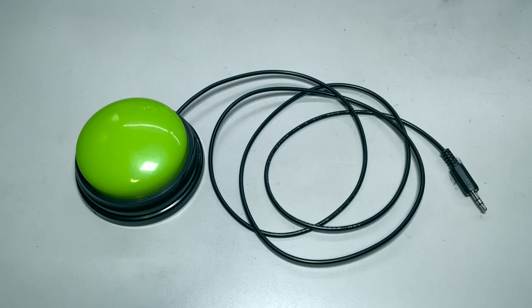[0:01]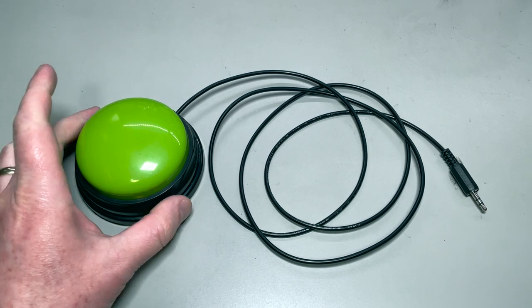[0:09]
Hey folks, today I'm going to show you how you can modify a button to be used as an input for adapted toys. So this one requires a firm press, but gives a nice loud haptic feedback. So if you can apply good force, this will be a good option for you.
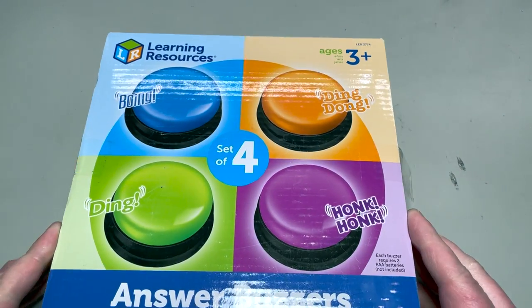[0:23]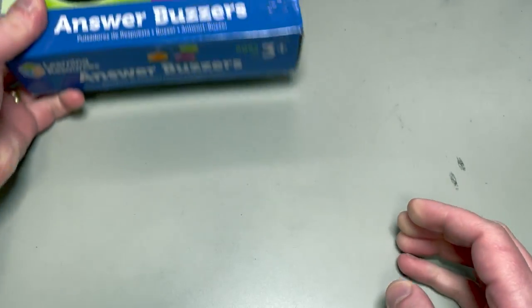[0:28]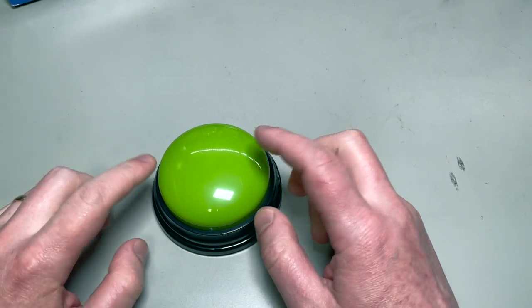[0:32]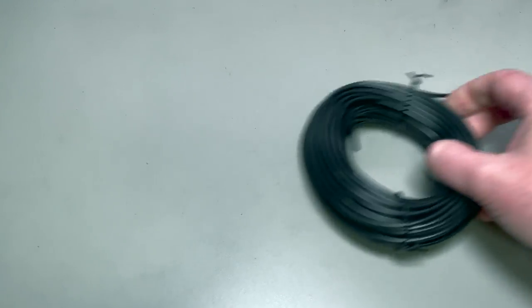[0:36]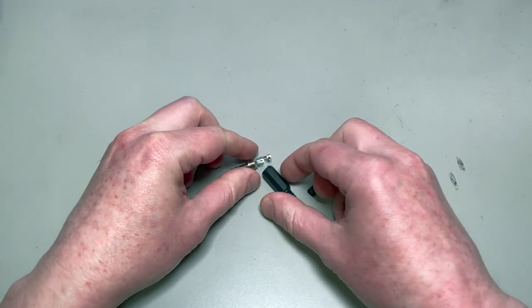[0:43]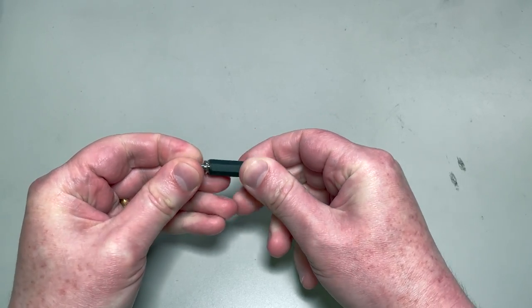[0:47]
So to make this, you're going to need a buzzer. In this case, we're using the Learning Resources Answer Buzzers, but any old button will work. But I'll show you specifically how to use that one. You'll need some wire. This is 24 gauge, two-stranded wire. You'll need the plug that we're going to wire this to, and some heat shrink tubing.
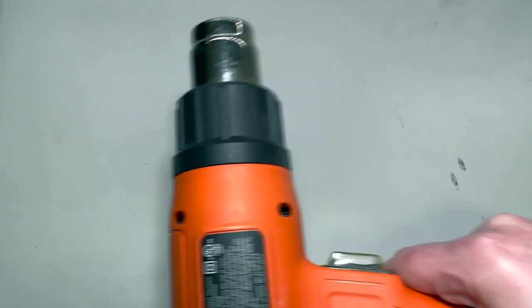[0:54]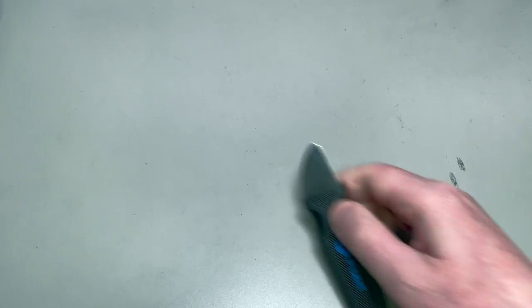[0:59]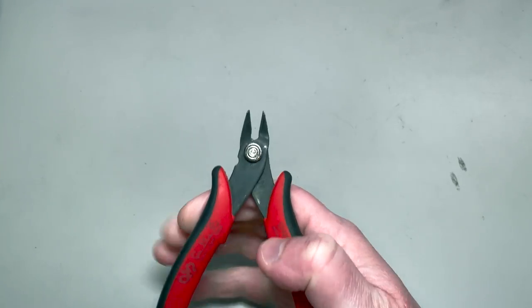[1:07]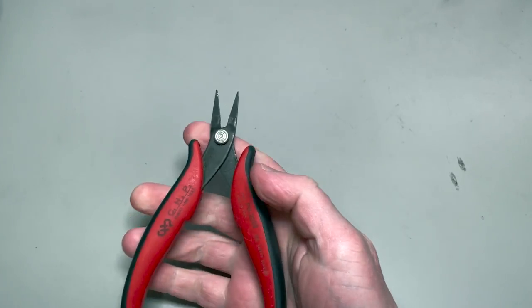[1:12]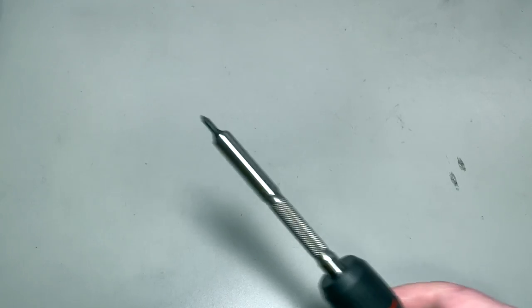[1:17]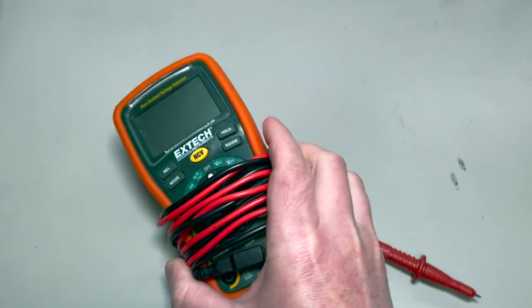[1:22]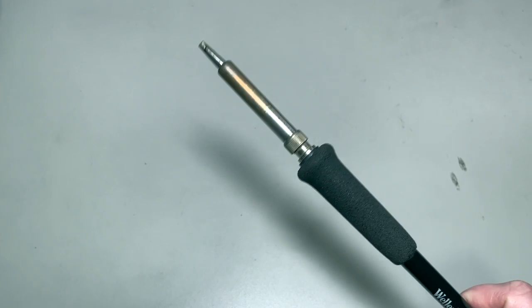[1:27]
You'll probably want a heat gun or a lighter for heat shrink tubing. To get that apart, we're gonna need a spudger or a flathead screwdriver would probably work. Some nippers. I really, really like this pair. I'll give you a link. Some good short needle nose pliers would be great too. A screwdriver to get into this thing. Some wire strippers. A multimeter or continuity tester to make sure that everything is working right, and a soldering iron. All right, here we go.
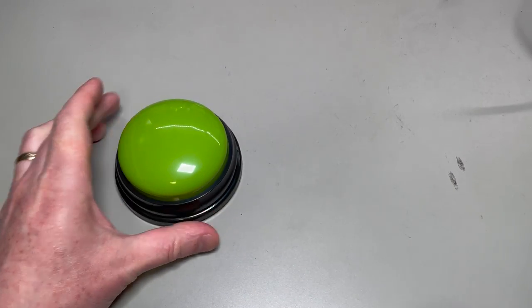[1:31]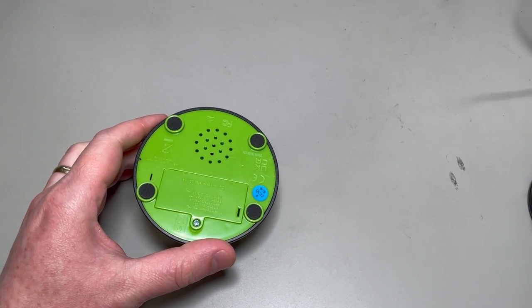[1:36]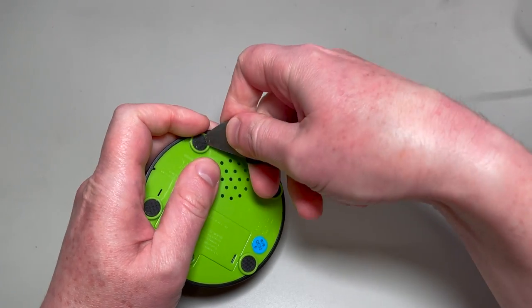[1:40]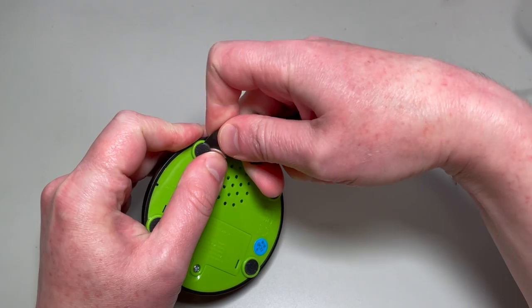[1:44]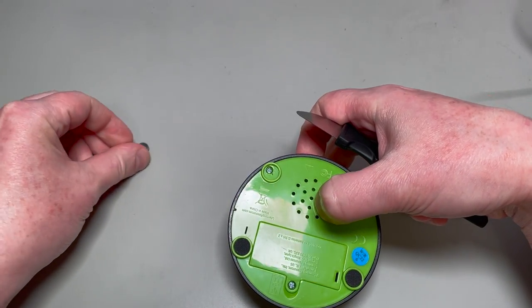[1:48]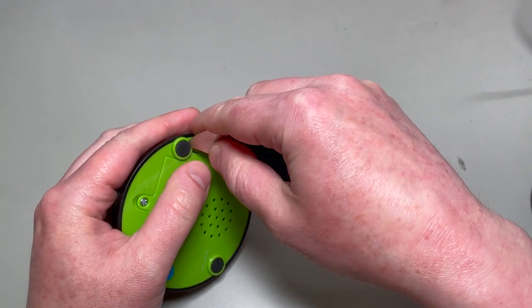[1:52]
First thing we're going to do is take this button apart. So get your spudger or a flathead screwdriver, and we're going to pry out these little rubber feet. They're held in there with an adhesive, and this gives us access to the screws. Set these aside, make sure not to lose them, and I like to set them sticky side up so that it will remain sticky.
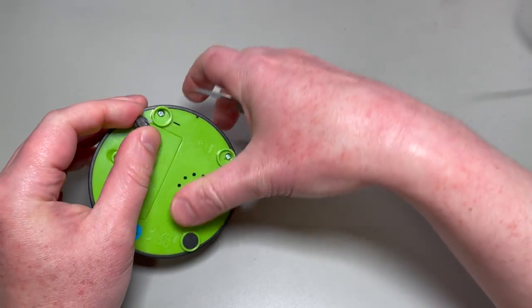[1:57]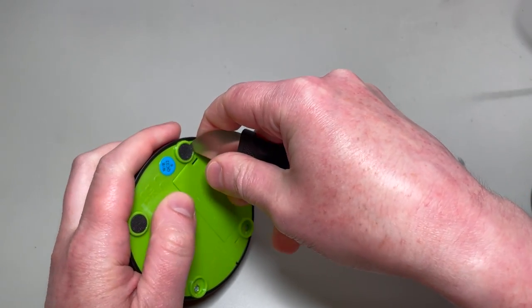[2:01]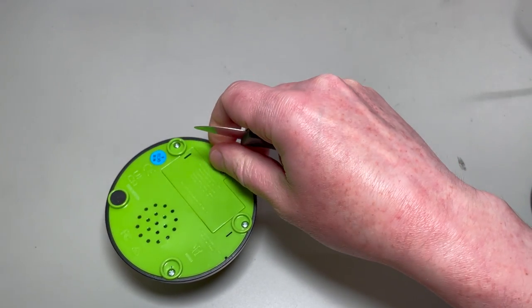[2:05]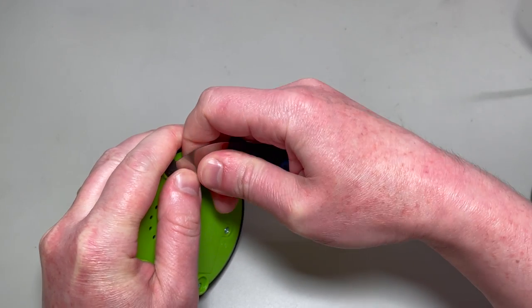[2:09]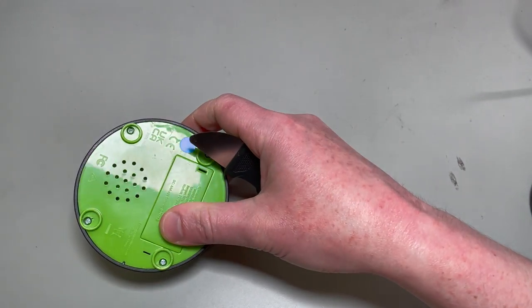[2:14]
I do think there's a chance that these could be considered a choking hazard. If a kid were to chew on this button and pry them out, then that might not be good. So maybe the right choice for you is gonna be to leave them off. I'm gonna put them back in. So I think they're in there pretty safe.
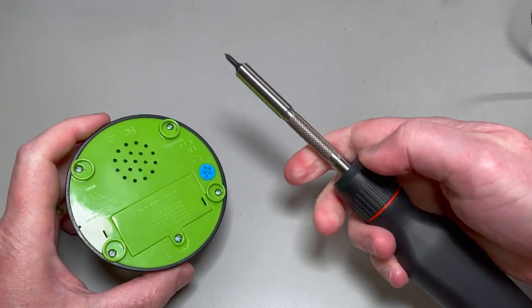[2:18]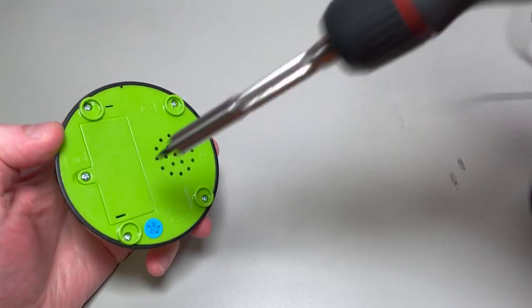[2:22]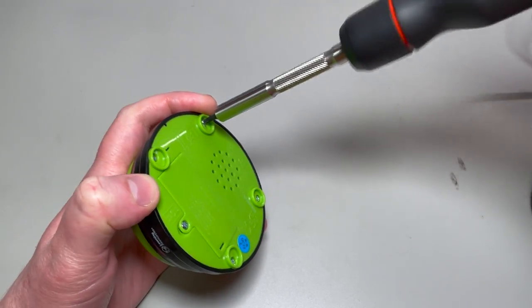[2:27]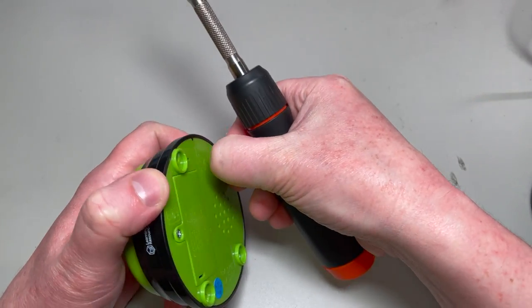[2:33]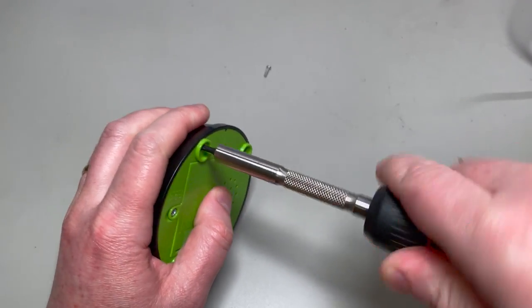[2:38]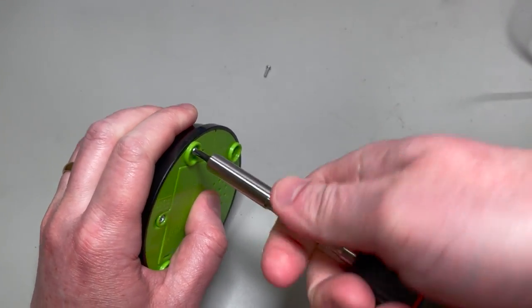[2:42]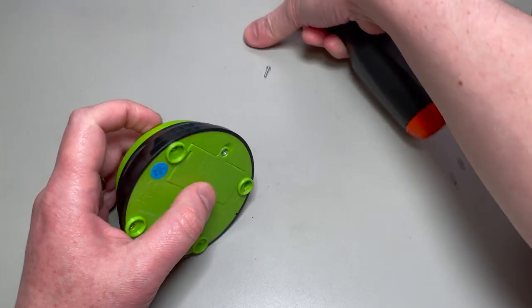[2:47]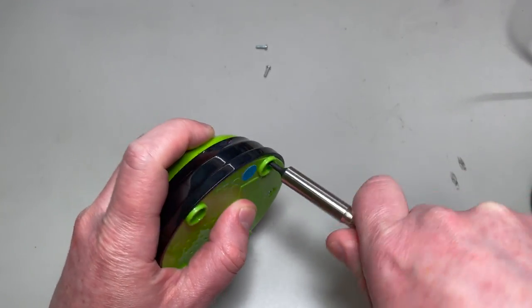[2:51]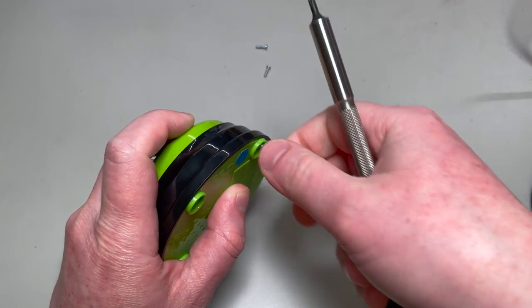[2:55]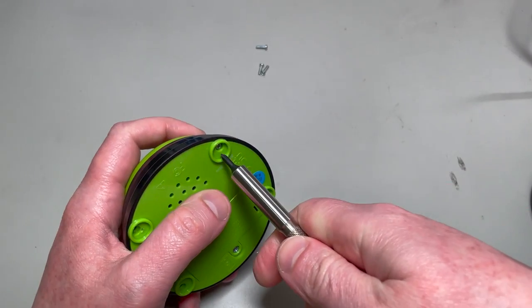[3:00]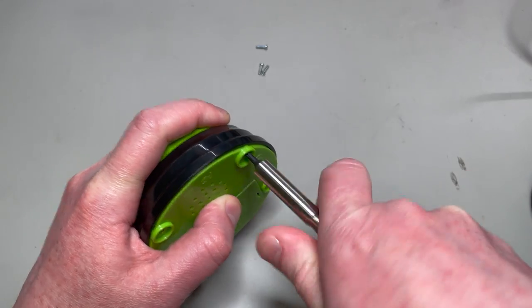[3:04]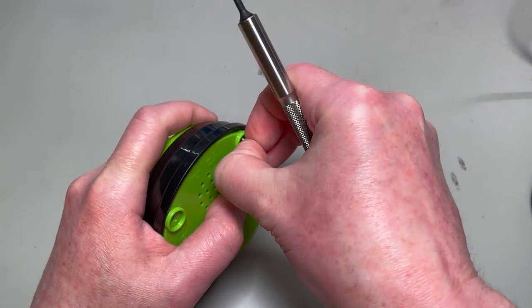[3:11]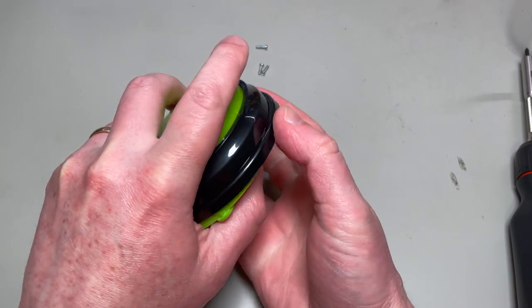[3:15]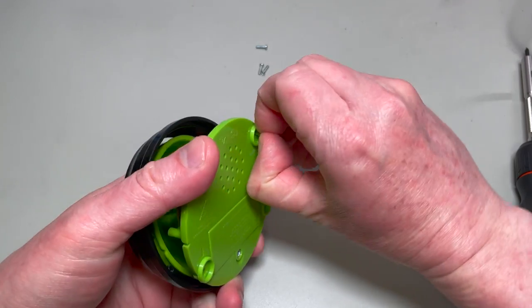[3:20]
Okay, and then let's take out these four screws. In here, in this one is the battery compartment. We're actually just gonna leave that alone because when we're done, this thing won't need any batteries. Set these screws aside. Again, make sure you don't lose them.
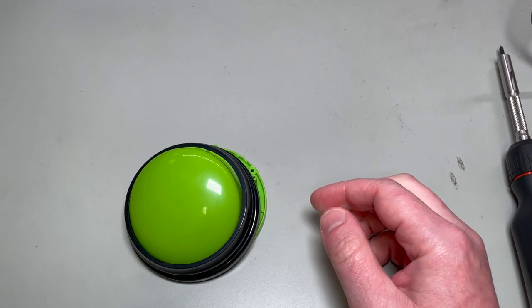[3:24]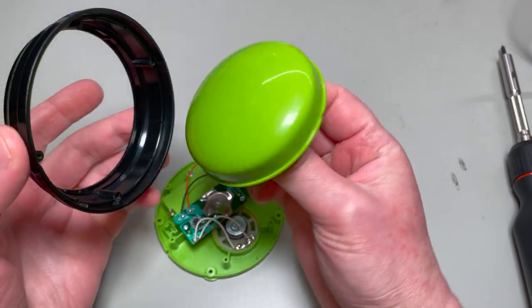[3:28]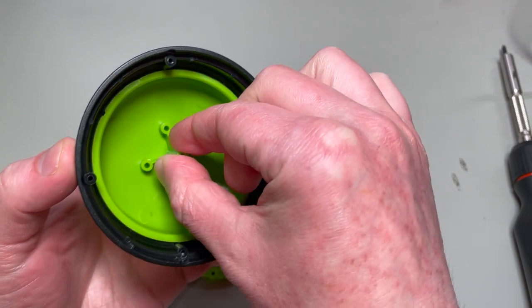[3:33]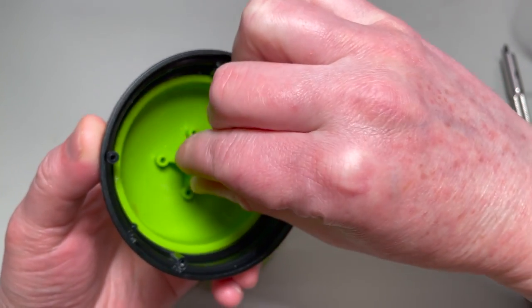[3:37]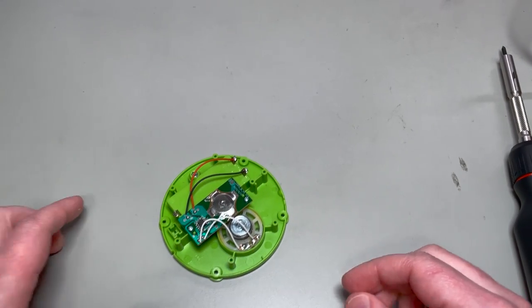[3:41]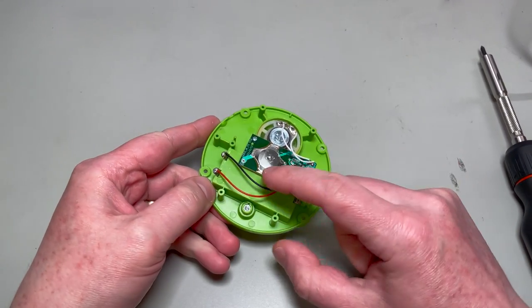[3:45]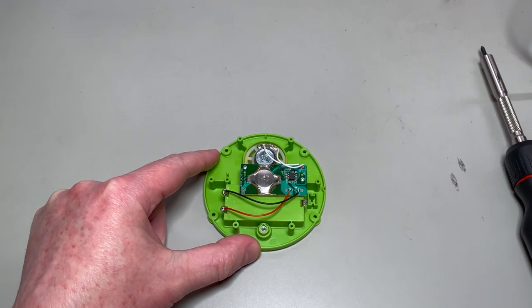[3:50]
Okay, and now we can look on the inside. So the button and its housing come apart. You'll notice there's a little groove that this button will slot into so that it can't rotate. You'll want to pay attention to that when we're putting it back together. Here's the inside. So the switch just comes down, makes contact with this big pad right here.
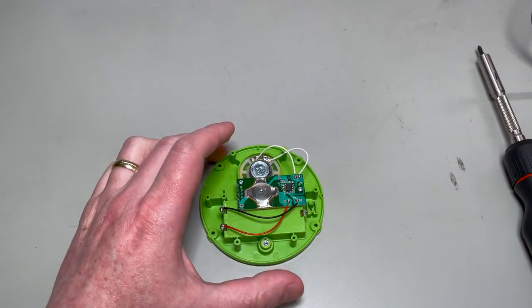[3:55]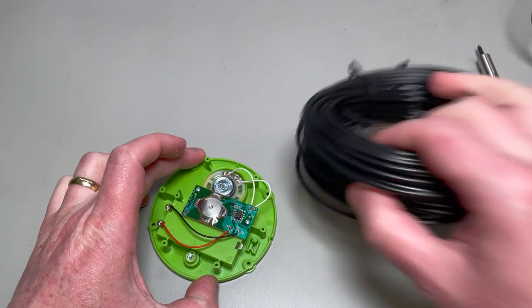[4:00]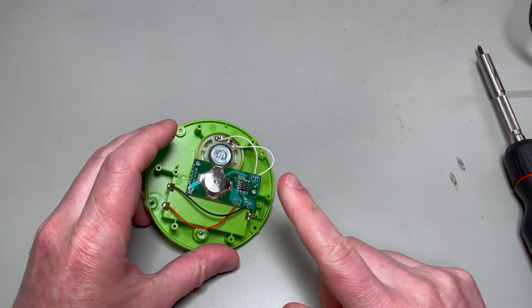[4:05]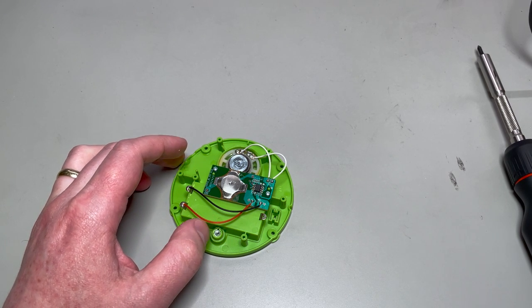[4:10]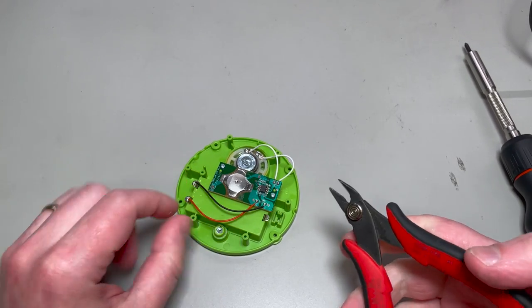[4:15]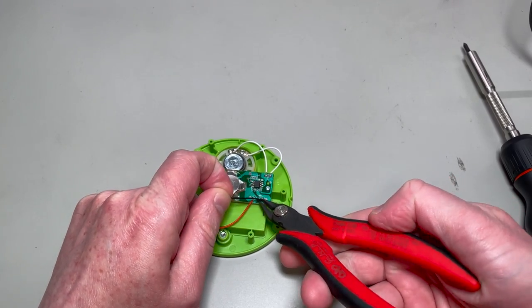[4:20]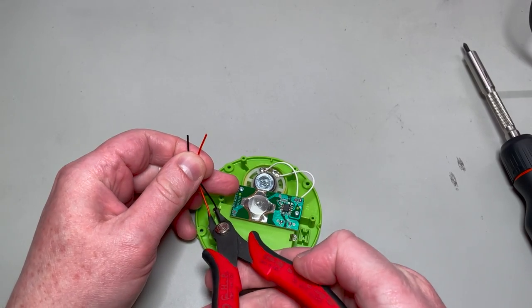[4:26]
And so what we're going to do is solder a wire in so that it bridges where this switch would close the circuit when it's pressed. Now, because we'll be plugging this into another toy that could have its own power supply, we want to make sure that nothing ever sends power from here to that toy. So the first thing we're going to do is cut the power lines. So let's just snip off these black and red wires and get rid of them. That way this thing can never do any harm.
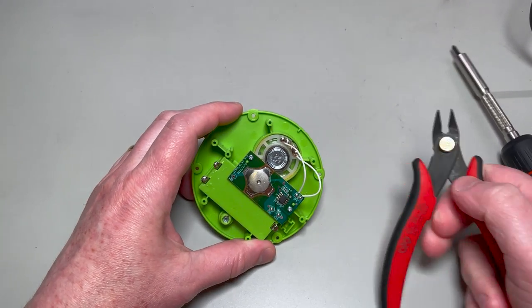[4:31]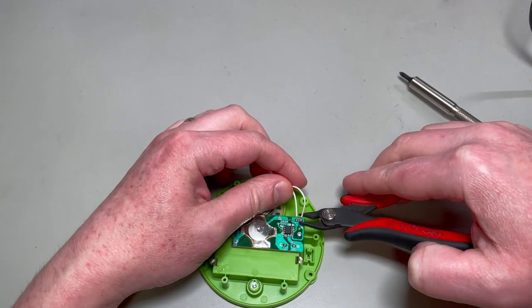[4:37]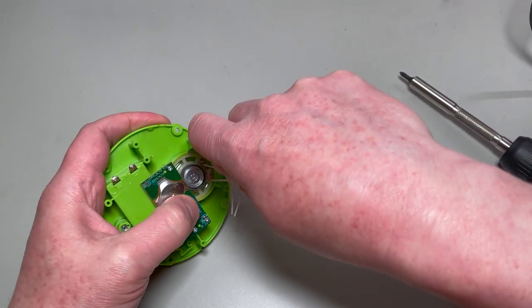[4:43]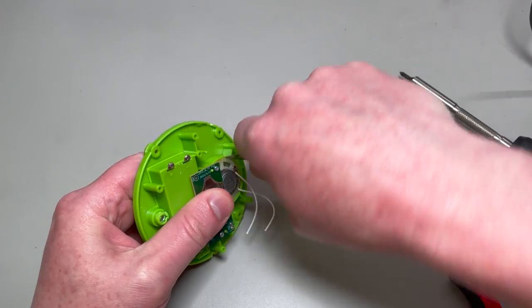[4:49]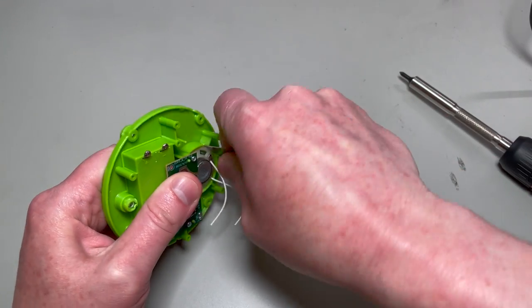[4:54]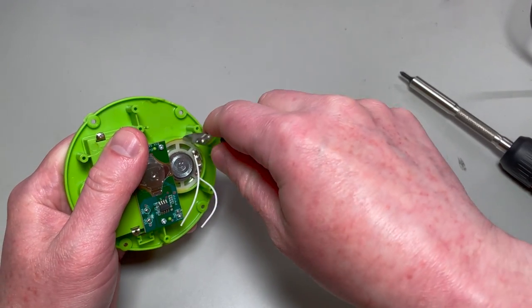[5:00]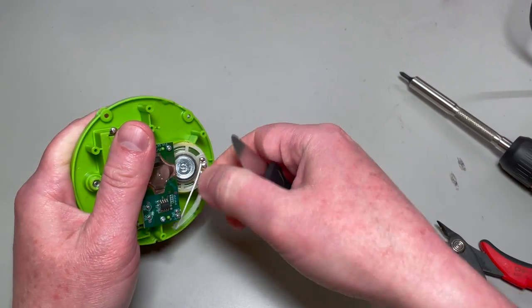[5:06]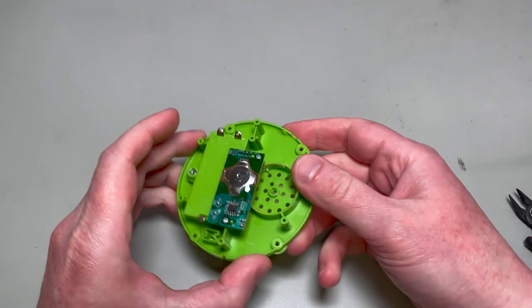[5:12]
There's also a speaker in here that this toy uses that we won't need. And you could leave that, but I'm going to cut it, and I'm actually going to pry out this speaker and harvest it for future fun times. Who knows, maybe there'll be a different project that needs a speaker. So you're coming with me. Okay. Goodbye, speaker. All right, now we have just our board.
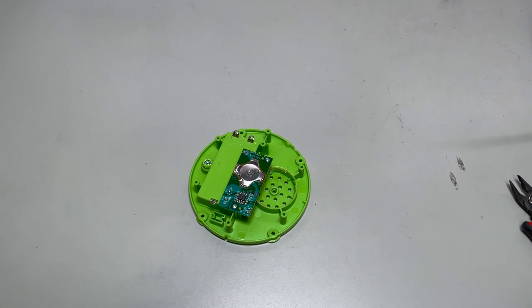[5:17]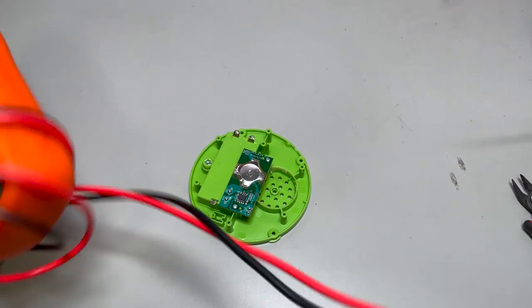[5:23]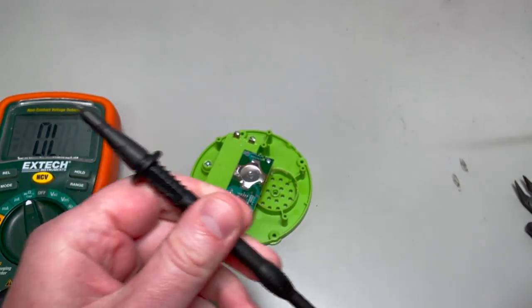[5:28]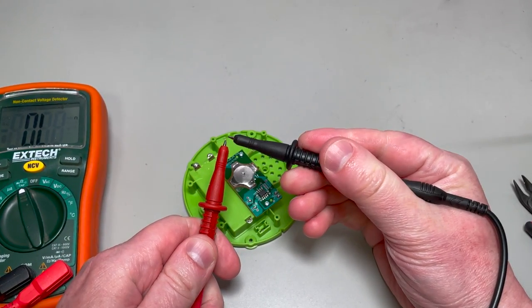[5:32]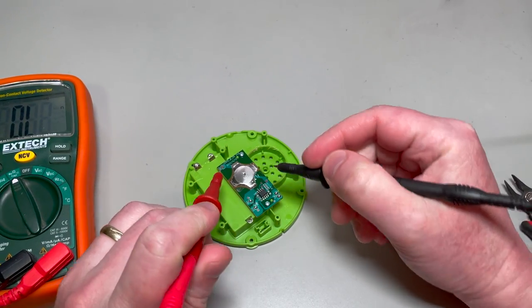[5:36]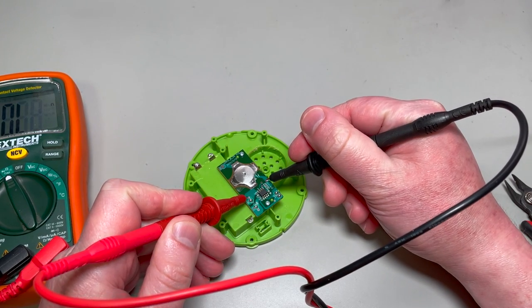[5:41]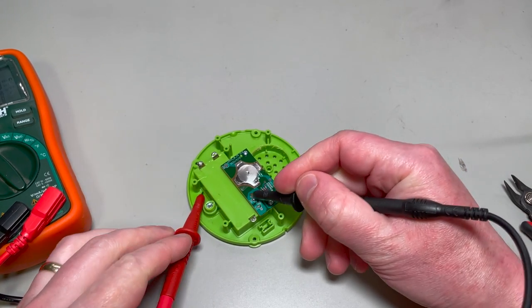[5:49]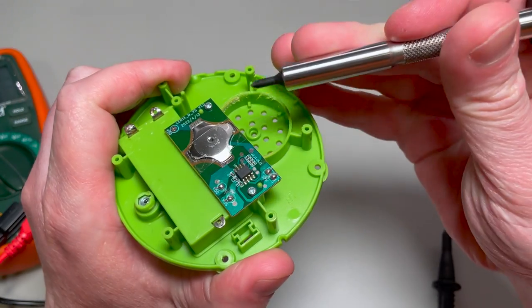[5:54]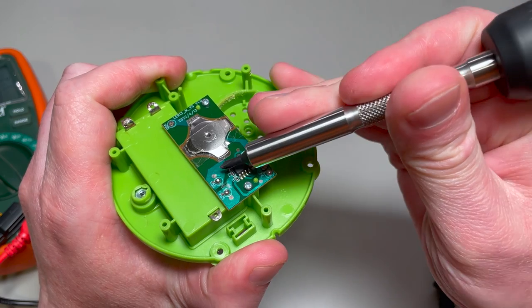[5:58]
So this is where you would want to use a continuity tester to determine what wires we're going to be connecting. You don't need to here because I'll show you. So we confirm that when these two touch, we get a beep. Great. So I know that the switch connects from this pad right here to this pad up here. So if I touch them, nothing, but then if I depress the switch, great. So we'll be soldering to this point and this point. Let's see if I can make that really easy for you to see. It's going to be this pad right here and this pad right here. Okay.
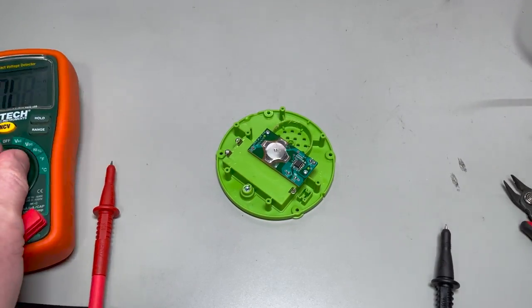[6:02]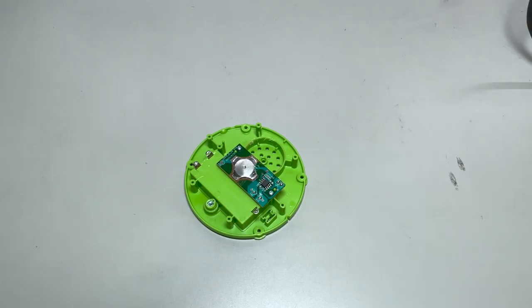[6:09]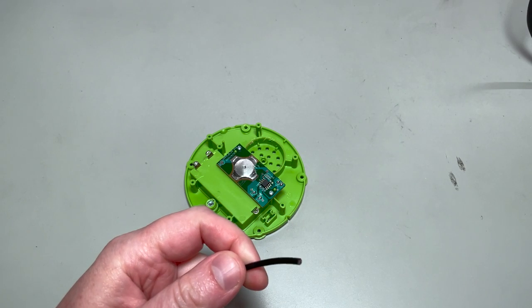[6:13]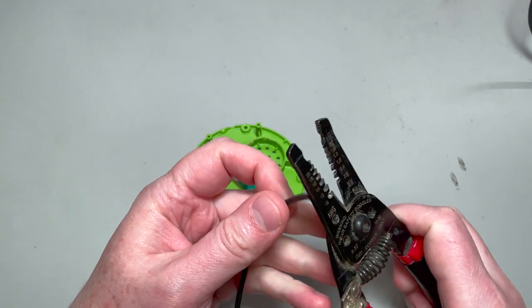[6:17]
Next step, you'll want to measure out and cut off 5 feet of your wire. So here I've got a good long length, and then we're going to strip some of the exterior of the wire off.
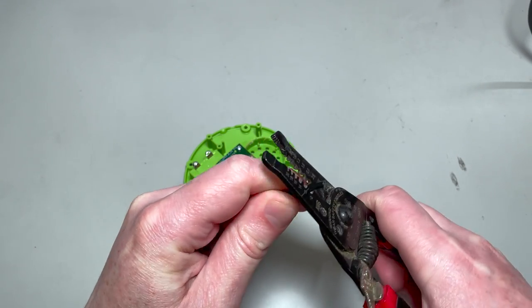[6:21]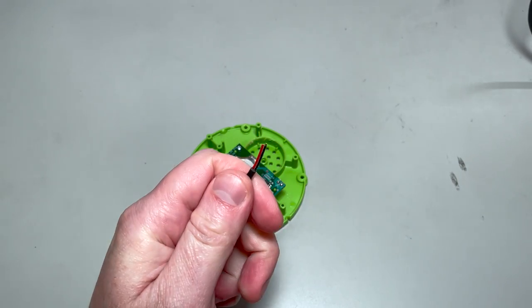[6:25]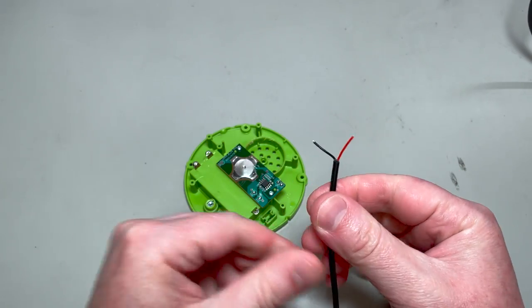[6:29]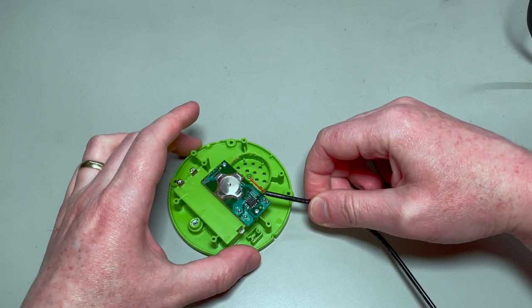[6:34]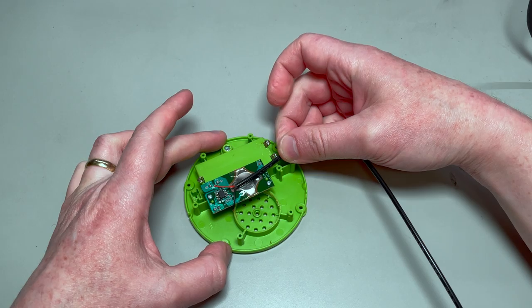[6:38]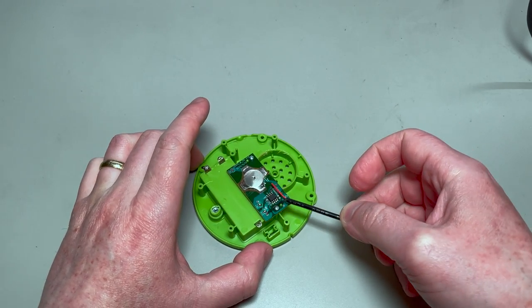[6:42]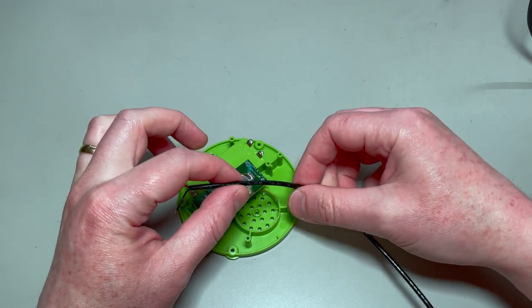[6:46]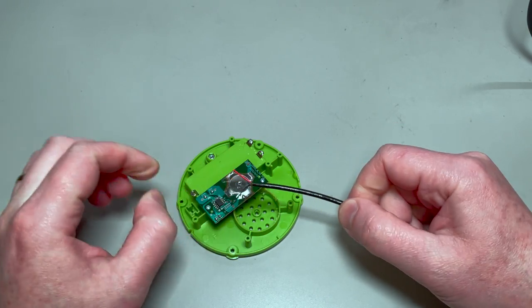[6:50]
Revealing the two leads inside. When the wire escapes the housing, you just want to make sure that it's not going to cross the switch area. So I like to orient it maybe this way, maybe this way. The other thing is we're going to want to put some strain relief on it so that if someone were to pull the wire from the outside, it wouldn't try and just rip off the solder joints.
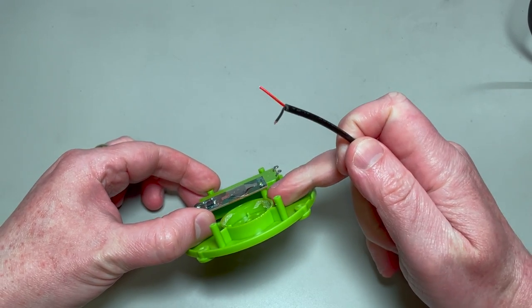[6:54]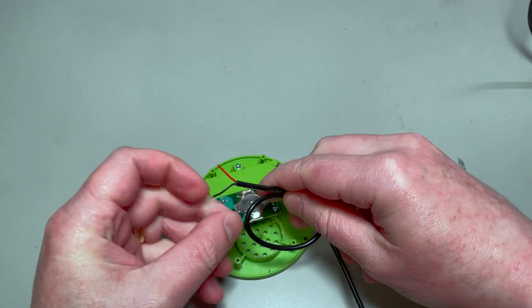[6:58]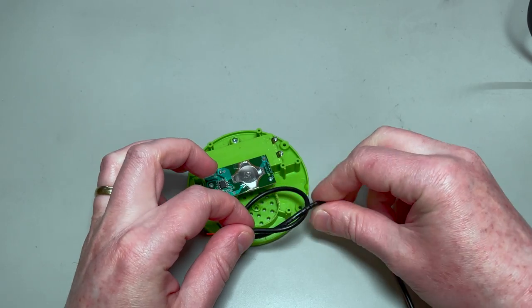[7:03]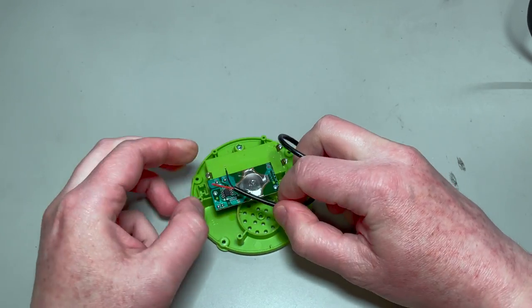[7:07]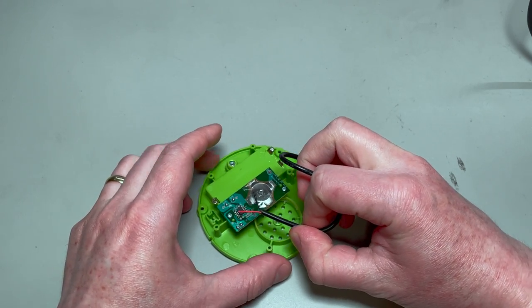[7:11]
So there's actually a post in here that I'm going to loop the wire through, tie it into a knot, and then that will provide the strain relief. So take that into account when you are situating your wire. Because of how the knot's going to get tied, I'm actually going to put it kind of like this.
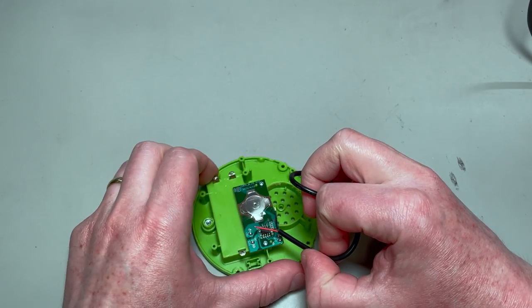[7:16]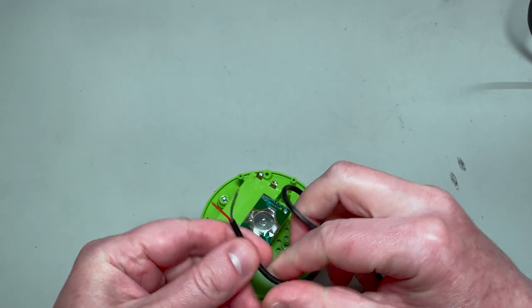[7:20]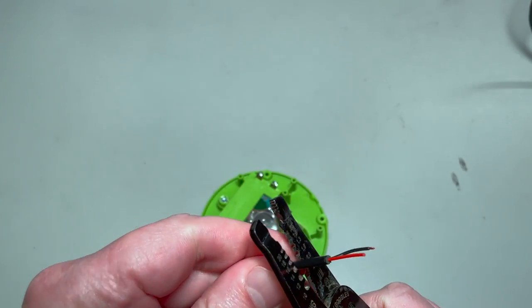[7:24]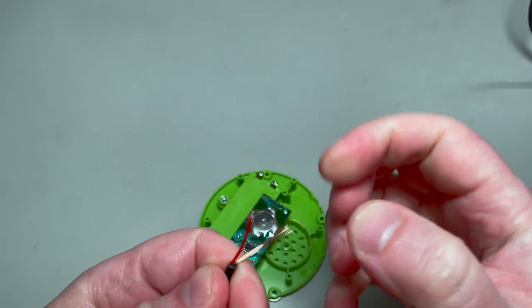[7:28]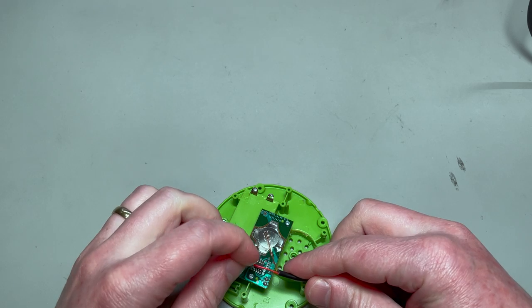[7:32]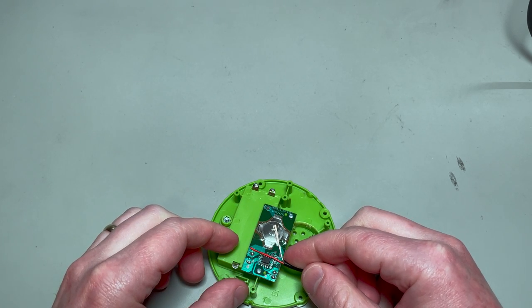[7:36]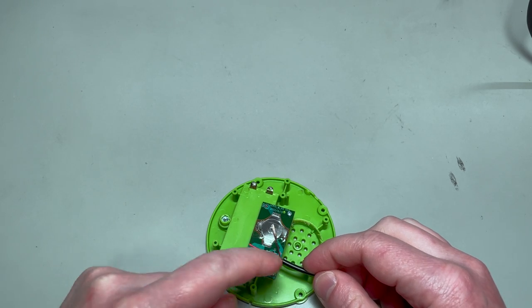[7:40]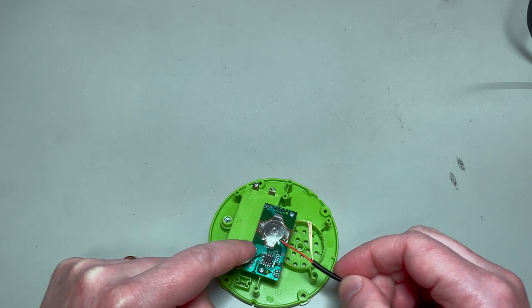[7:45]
Okay. So I'm going to strip off just a little bit more. Oh, and the whole black wire came with me. Well, that answers my next question, which lead is getting soldered where. Because the black has been stripped all the way back, I'll go ahead and solder it to this pad, and then I'll solder the red to this one over here.
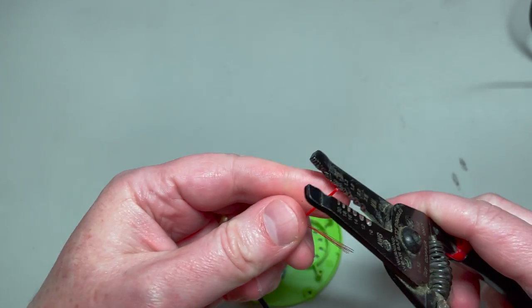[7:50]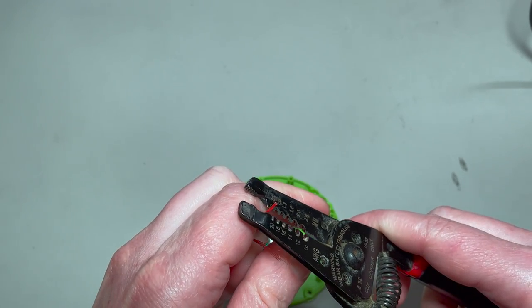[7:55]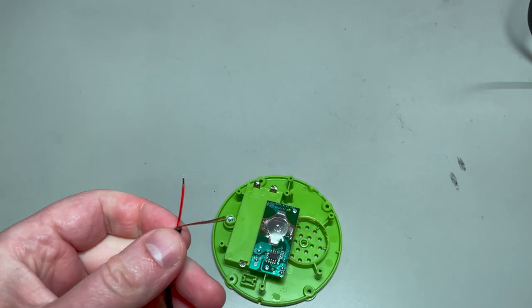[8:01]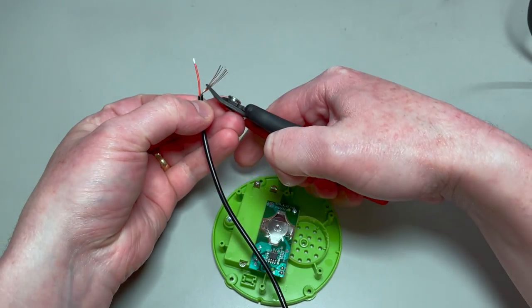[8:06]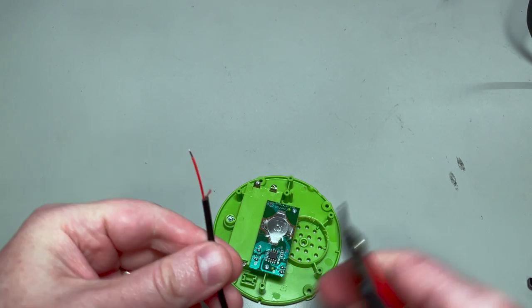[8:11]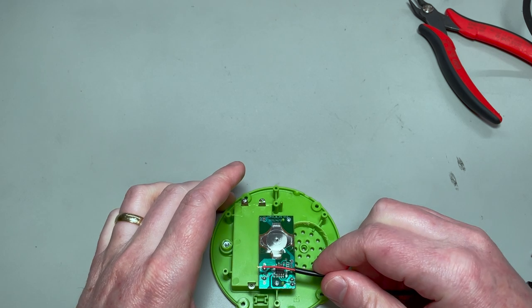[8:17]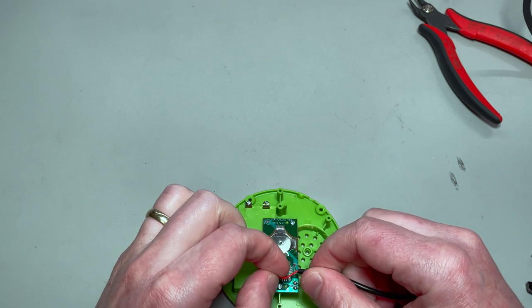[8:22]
So I just want to strip off just a little bit of the end of that red. There we go. And we'll use our cutters to go ahead and cut down all the excess from that black lead that we don't need. Okay. Twist these up just a little bit. Okay, and so we'll be soldering black there, the red there. Great, let's go ahead and get the iron hot and we'll get that soldered.
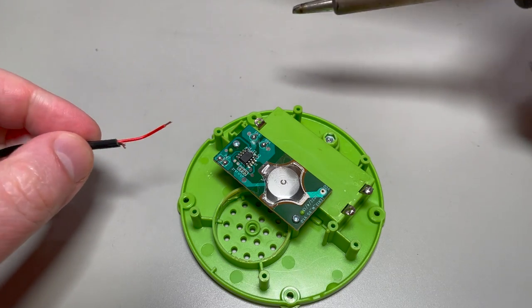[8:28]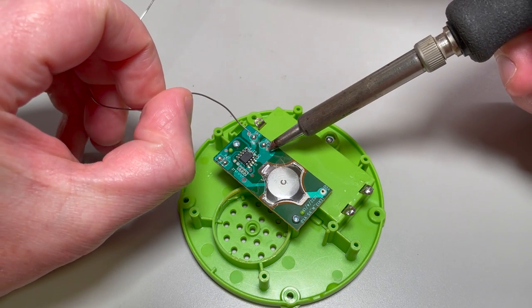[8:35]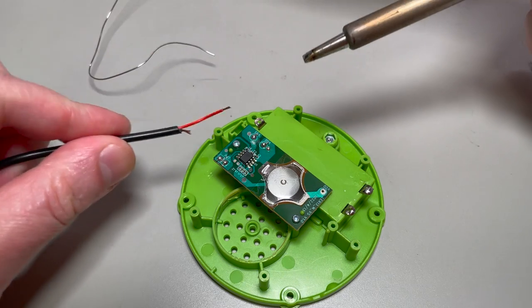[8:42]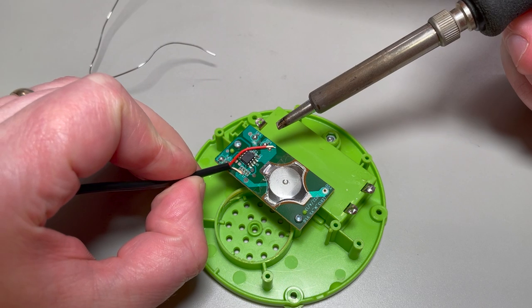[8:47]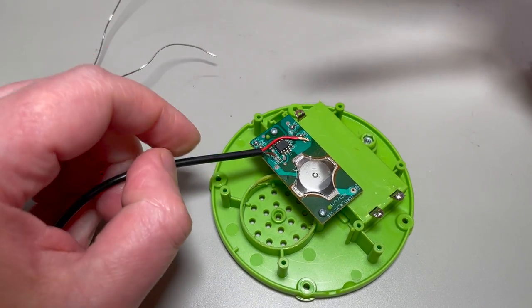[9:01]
I've turned this so the angle's a little easier for me to work with. The iron's hot and the end has been tinned. So I'm gonna go ahead and first try and apply a little dab of solder to this pad. Great. And now I'll set the red wire on the end there where it's going to go. Press down, heat the wire, heat the pad until the solder begins to stick. There we go. Let it harden up a little bit.
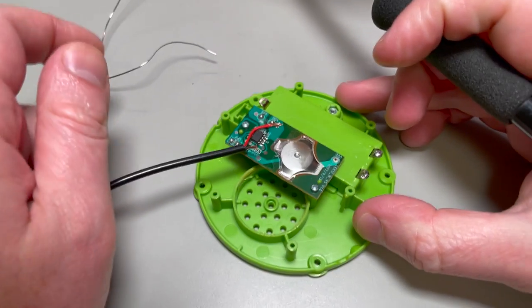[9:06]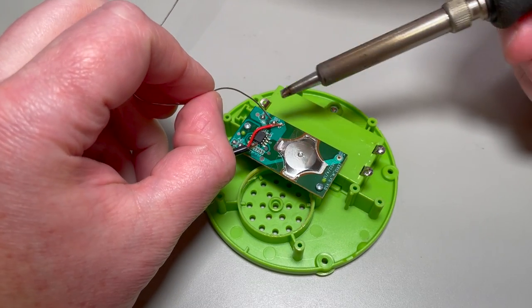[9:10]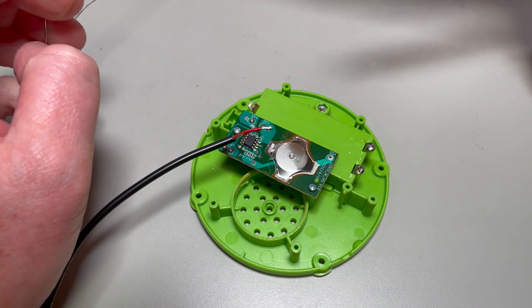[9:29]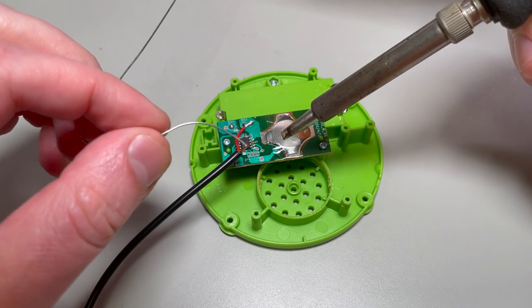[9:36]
That's a decent start to this connection. Sorry for jostling you there. Put some extra solder on this, make sure it's feeling secure. There we go. Oop, came off. Try again, heat it up, press it down. You can actually go ahead and use the pad that the original positive line was coming in. It's much more convenient. Okay, do the same thing for this other pad.
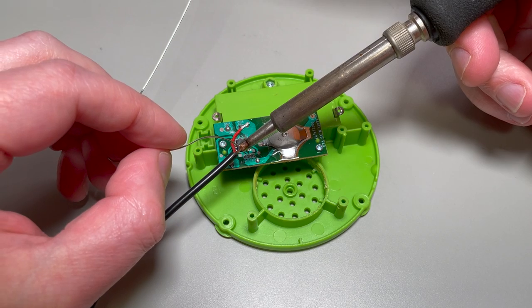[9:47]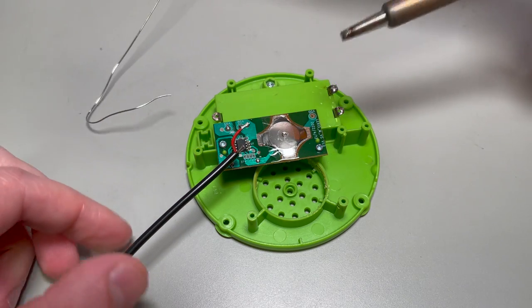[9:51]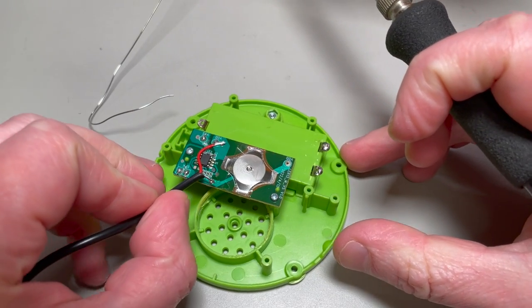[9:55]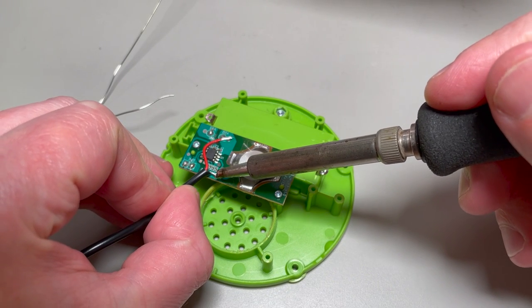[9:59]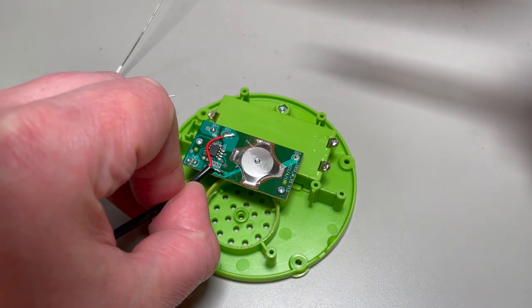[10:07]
And this time, I'm actually going to tin this wire first. There we go, get some solder on the end there. And now, because there's solder on the pad and solder on the wire, I can just heat them both up together, let go, and that connection should be secure. Excellent.
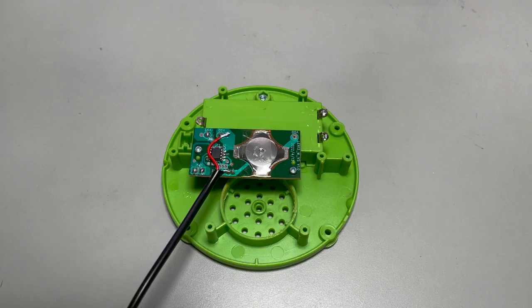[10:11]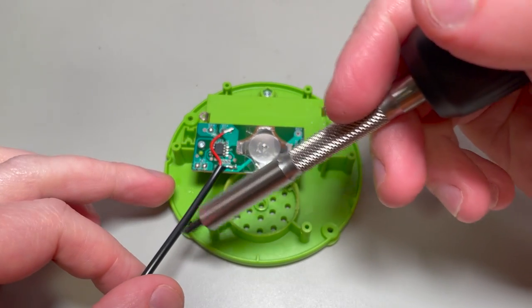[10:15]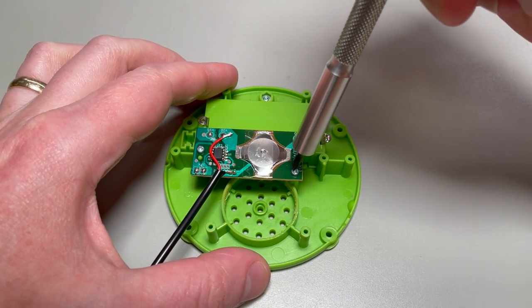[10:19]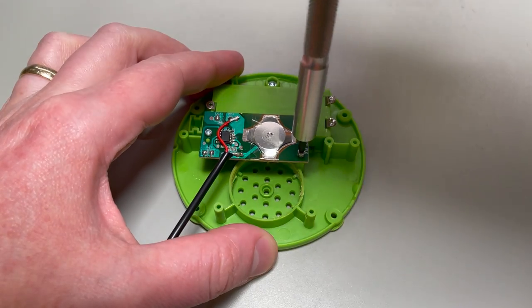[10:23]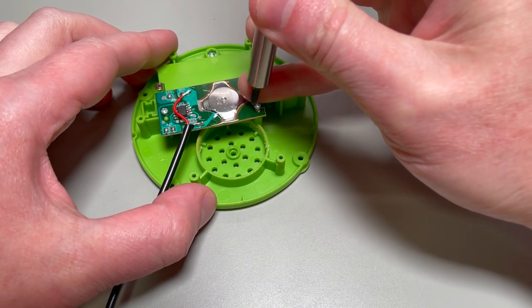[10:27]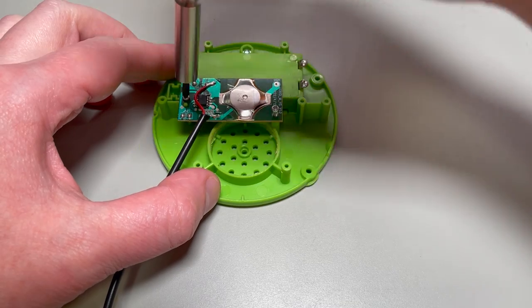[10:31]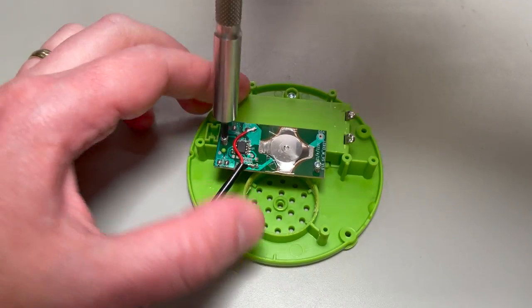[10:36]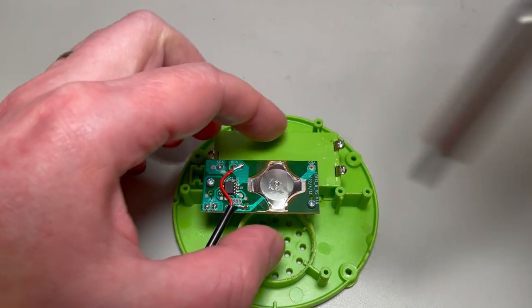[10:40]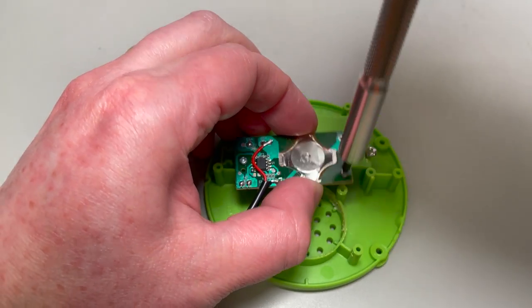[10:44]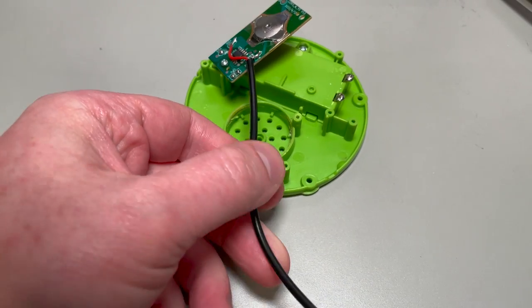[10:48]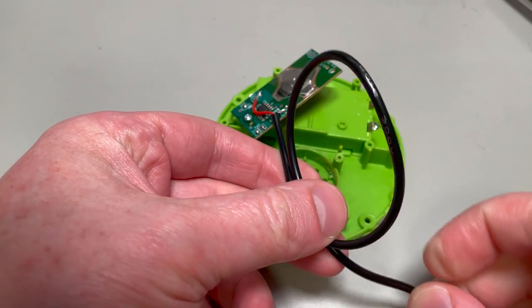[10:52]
Now that the solder joint has been made, it's time to tie the wire onto this post, but I find it a little difficult to get to, so I'm actually going to take out the two screws holding this board in. So one there, one here. Tie ourselves a knot. Okay, how do you tie a knot? There we go.
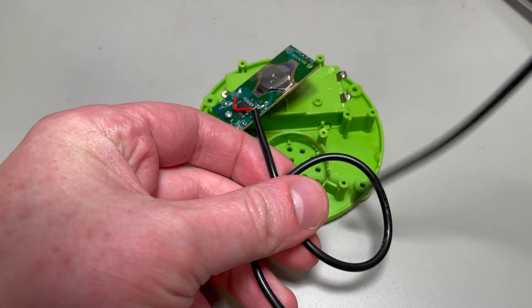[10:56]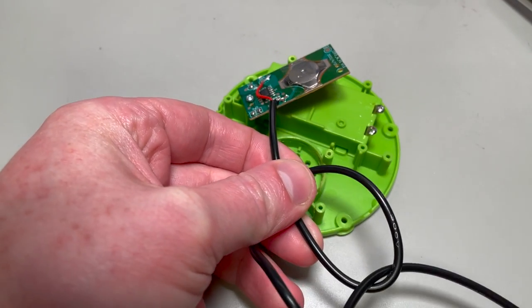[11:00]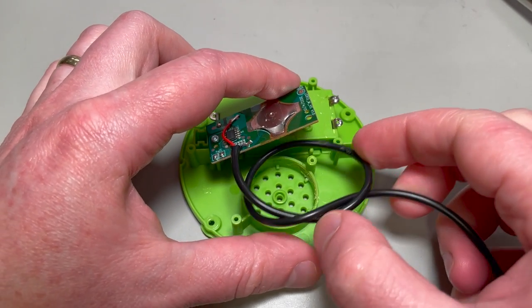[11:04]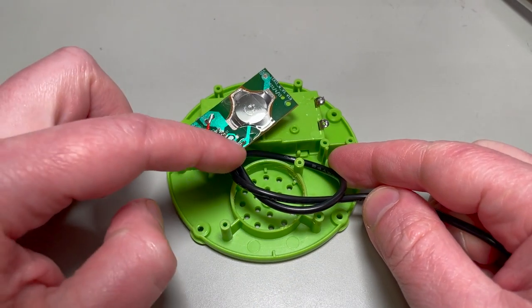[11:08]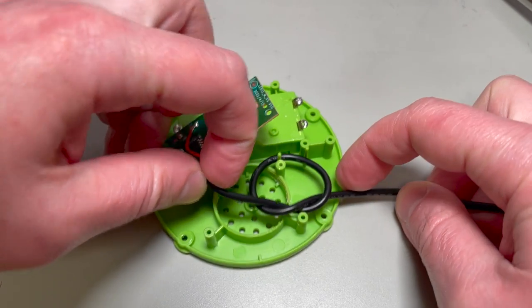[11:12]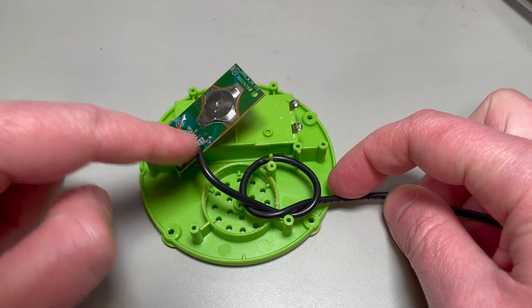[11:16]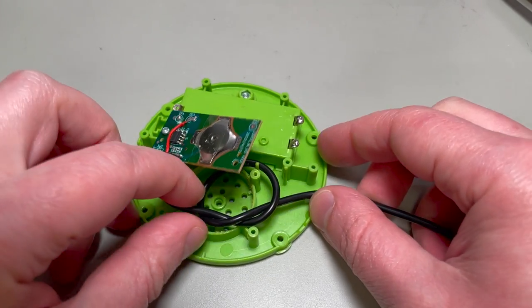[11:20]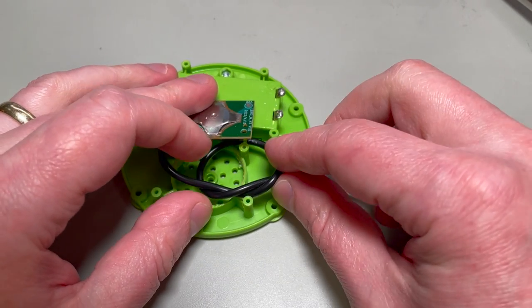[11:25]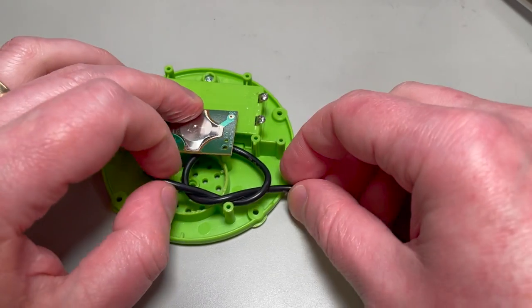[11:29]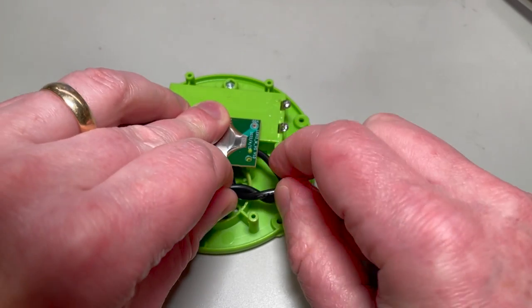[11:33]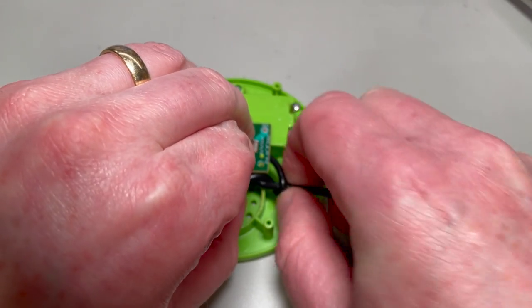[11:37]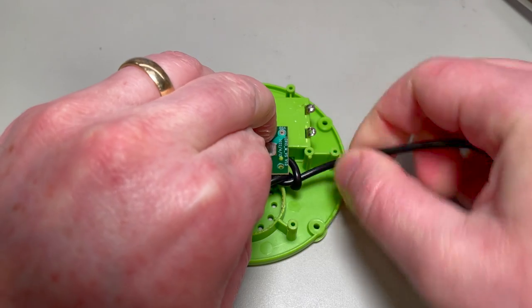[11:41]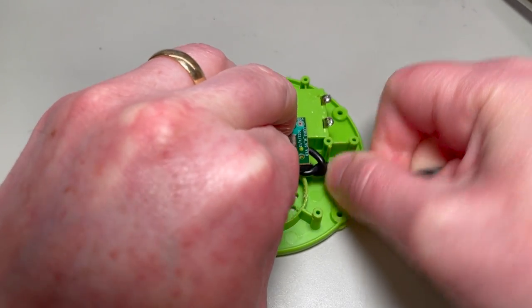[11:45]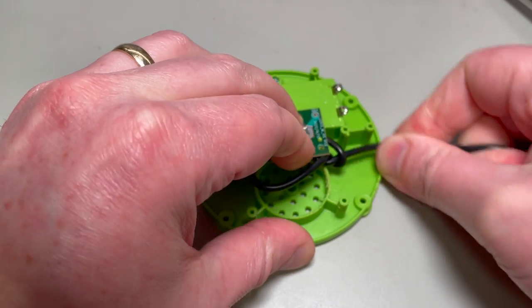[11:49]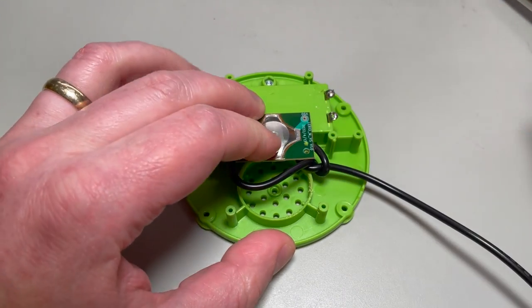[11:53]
Now be careful when you're cinching this up that you both leave enough slack on this part of the wire that you're not going to pull these solder joints off, but also don't leave so much slack that this wire is gonna hang out and hit the button housing. So we've got it in place. Now I'll cinch it down, keeping the tension that I want. Okay. That's pretty good. Yeah, that's not going anywhere. Okay, time to tighten these screws back on.
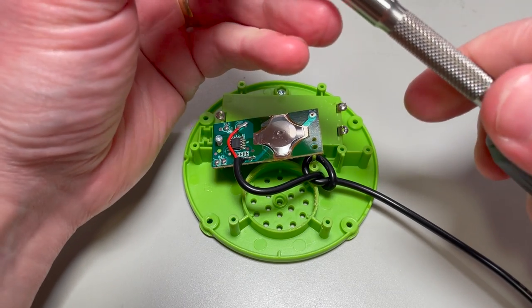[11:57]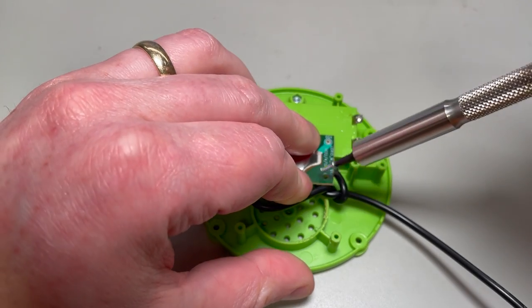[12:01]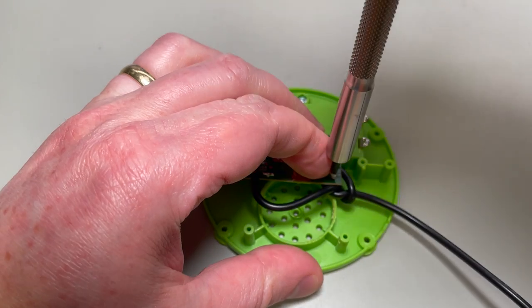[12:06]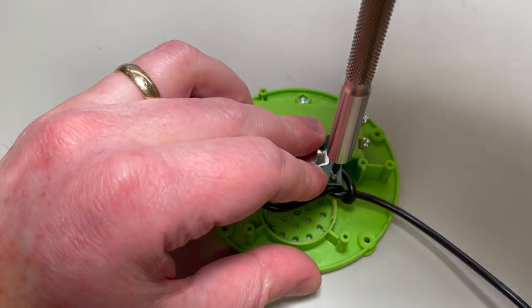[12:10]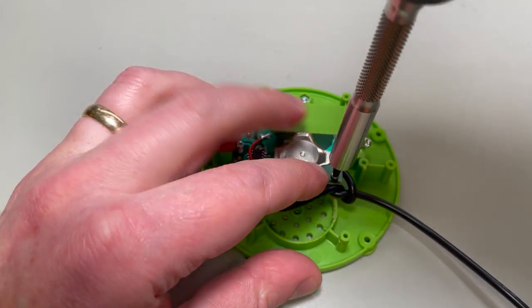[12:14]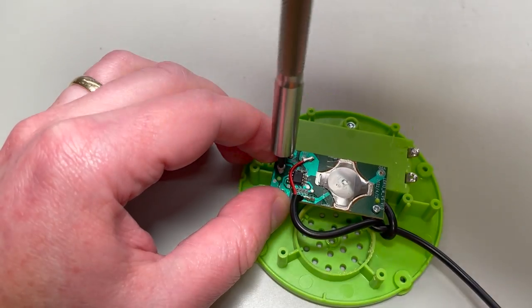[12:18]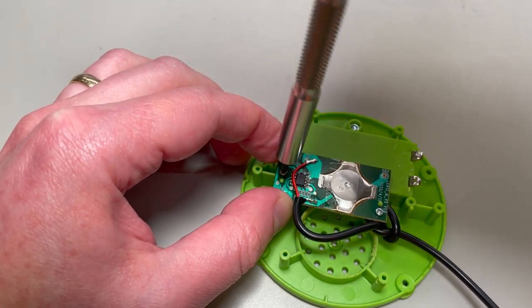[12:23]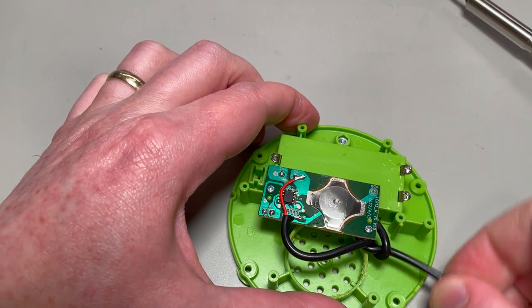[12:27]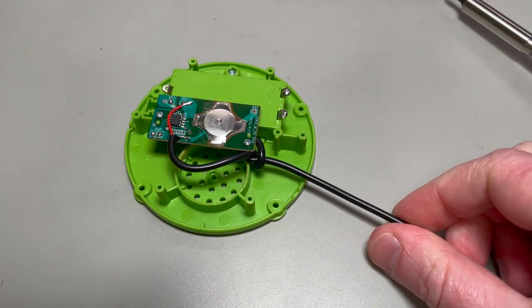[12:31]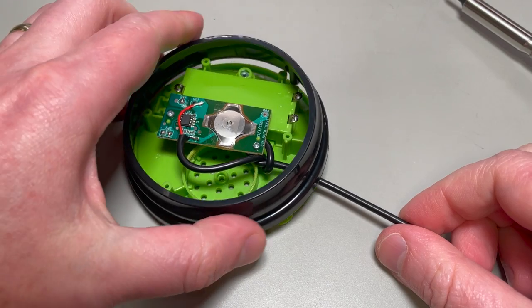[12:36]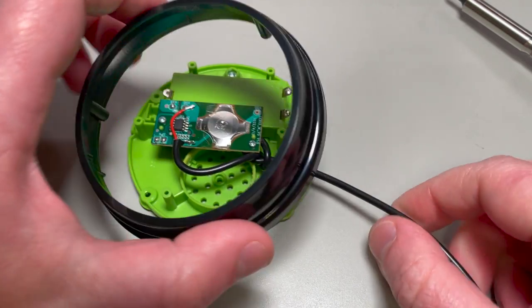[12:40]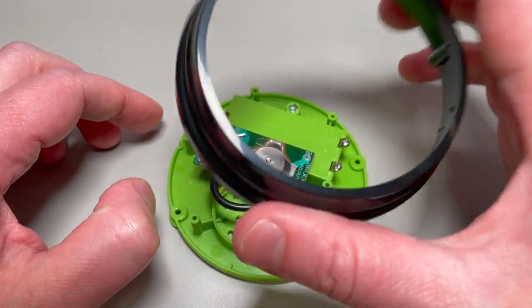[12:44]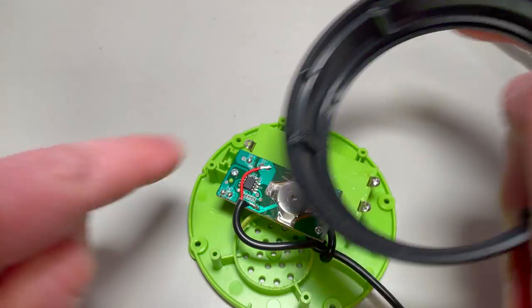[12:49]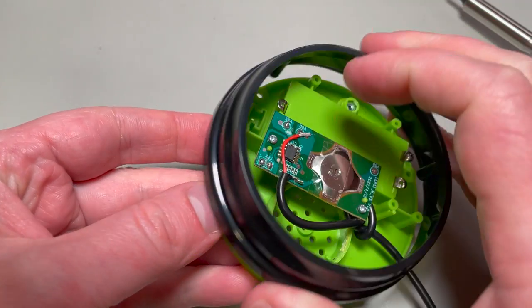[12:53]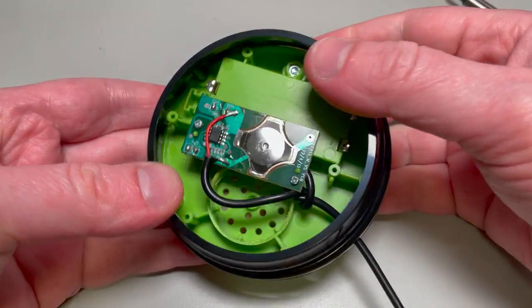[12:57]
There we go. That is nice and secure. Okay, now we're going to reassemble this button, but as we do so, we're going to drill a hole and thread this wire through so that it can exit. So the first thing we need to do is identify how this cover goes back on, and you'll see there's one little tab, and that's going to match up with this indent on the side here. Okay, great, so that's going to go like that.
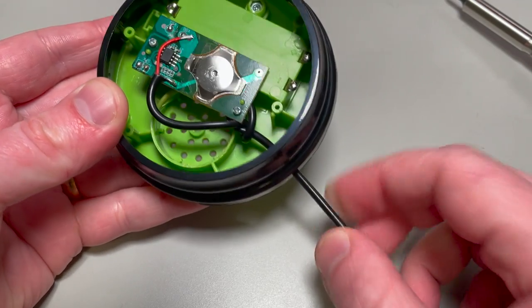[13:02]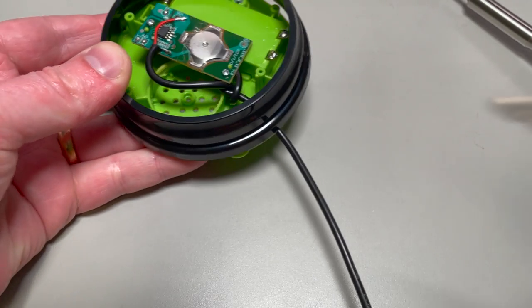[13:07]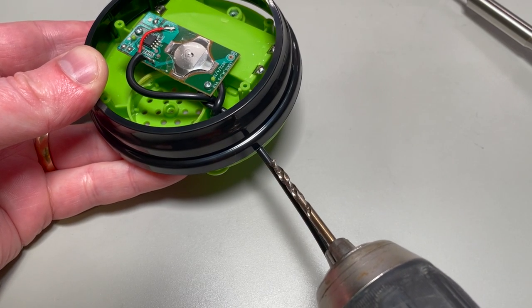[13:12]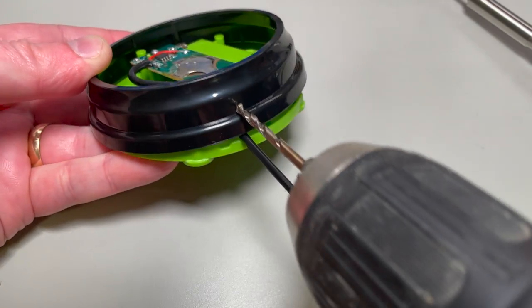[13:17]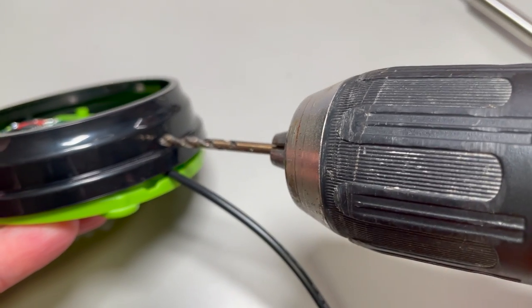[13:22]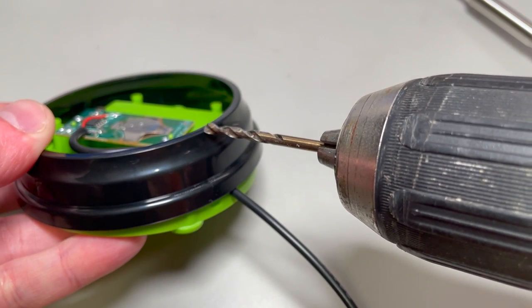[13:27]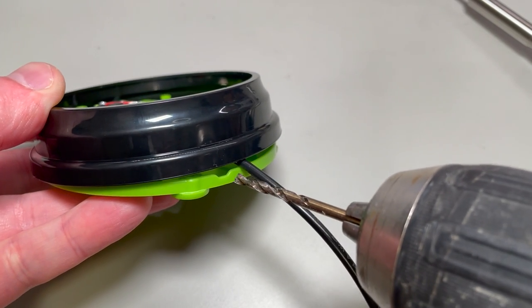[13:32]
And you can see the wire will naturally want to exit somewhere. Mine wants to exit about here. So I'm going to take a drill bit that is just about the same diameter as the wire. In this case, it's 1/8 for me. And I'm going to drill the hole, if you can see, just above the lip there. If you go too high, then when you put the green top of the button back on, it won't be able to press all the way. And if you go too low, you'll end up running into the bottom here. So just above the lip should be fine.
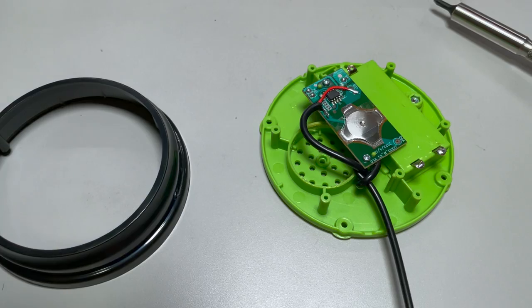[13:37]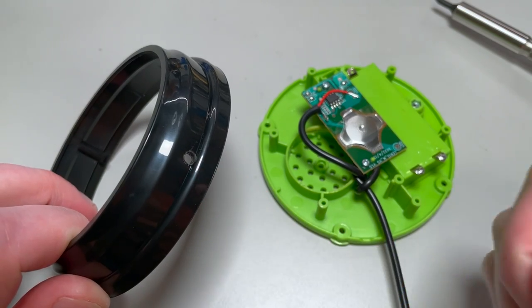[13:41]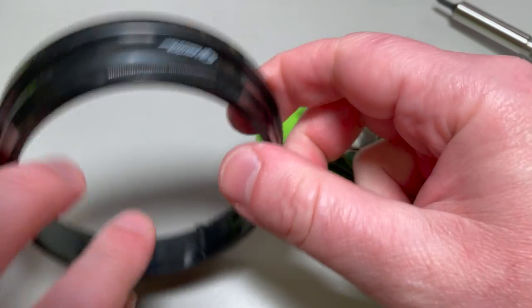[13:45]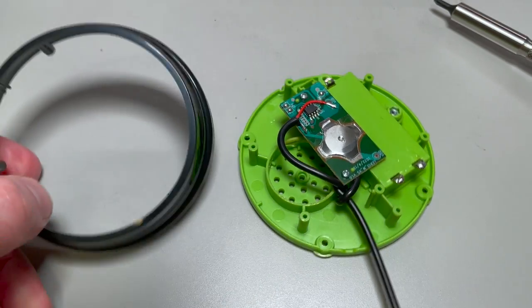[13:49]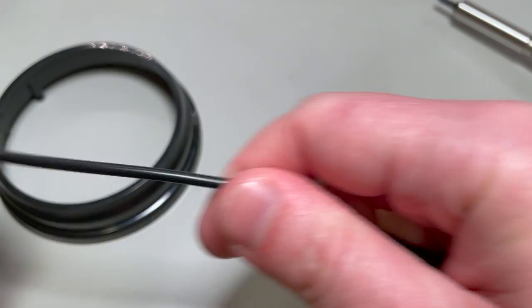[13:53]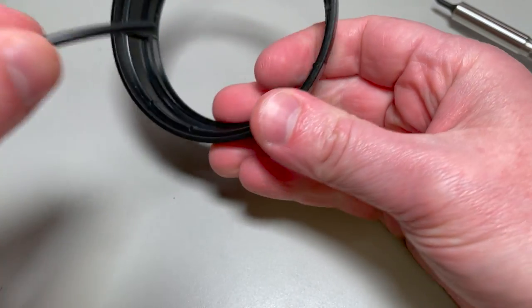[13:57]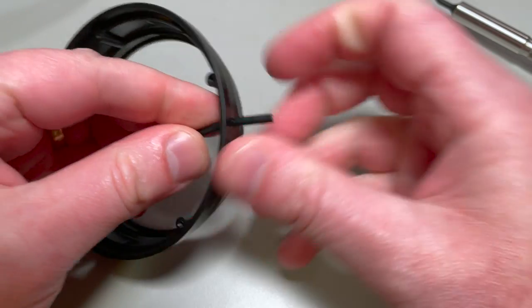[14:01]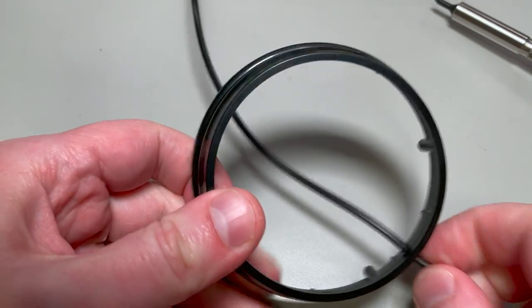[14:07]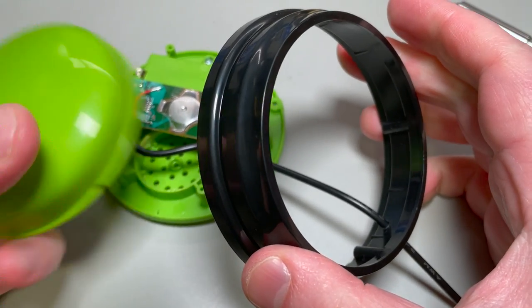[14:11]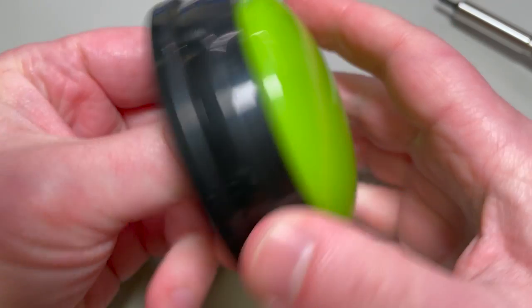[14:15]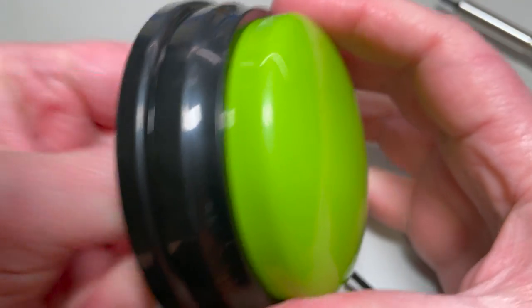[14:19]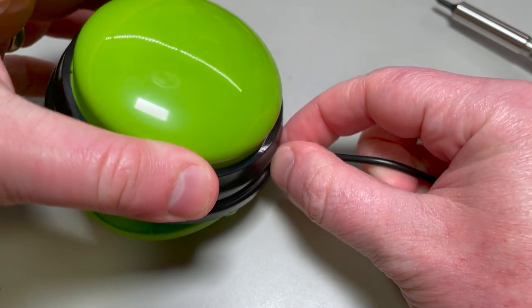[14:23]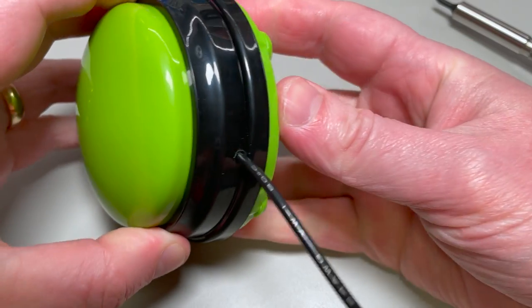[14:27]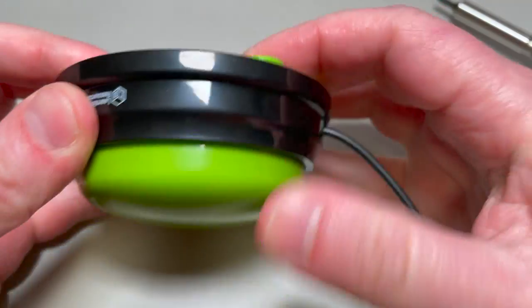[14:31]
Okay, I actually went and drilled out this hole over a trash can because it sends little black bits flying everywhere. And then I used my flat cutters to sort of clean it up a little bit. So now it is time to thread this cable through. You're going to want to go in from underneath, thread the wire through the housing, all the way down, and then before closing up, we will put the button cap back in place. Remember to find where that aligns. Actually, if you spin it, you'll feel it where it pops all the way through. Then we'll cinch this the rest of the way down. Put the button top back on. There we go, everything's all lined up.
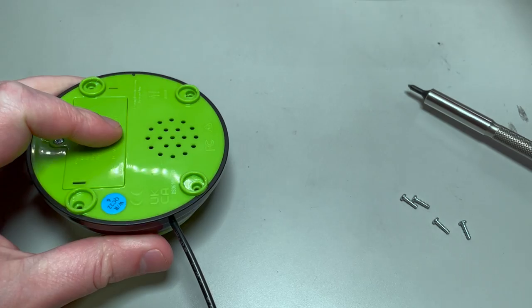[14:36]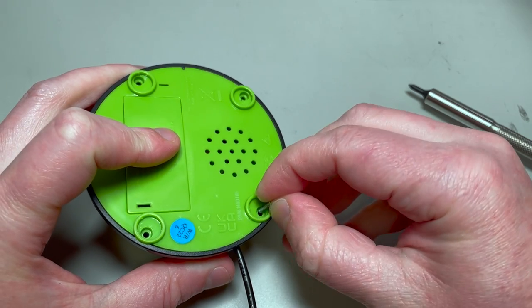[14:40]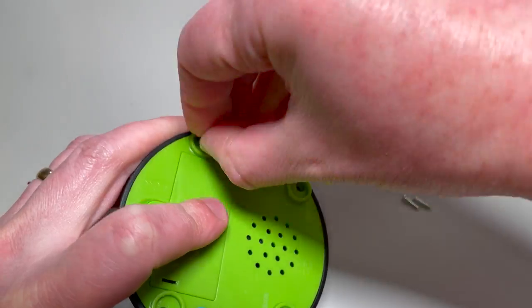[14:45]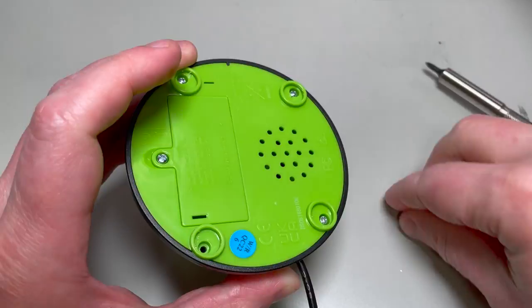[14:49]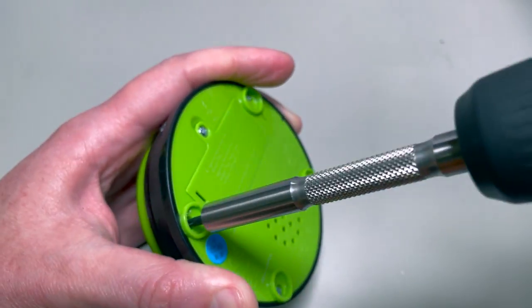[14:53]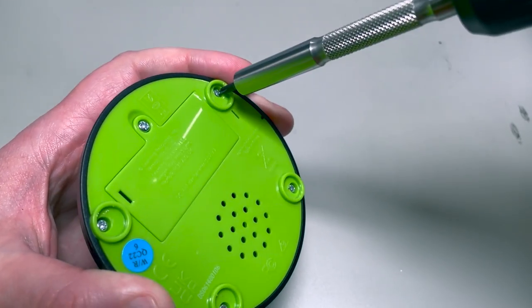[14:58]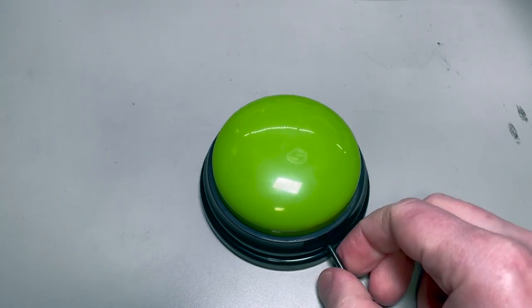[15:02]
Put the screws back in. Gathered up these screws, let's put them back in their little holes and tighten them down. Okay. Definitely don't want to over-tighten these. This plastic, I'm sure, isn't very robust. Okay, screws are back in. Look at that. Button presses, cord's on there tight.
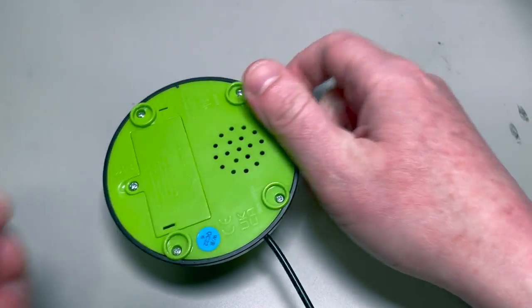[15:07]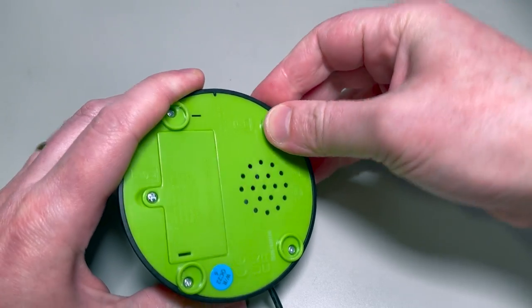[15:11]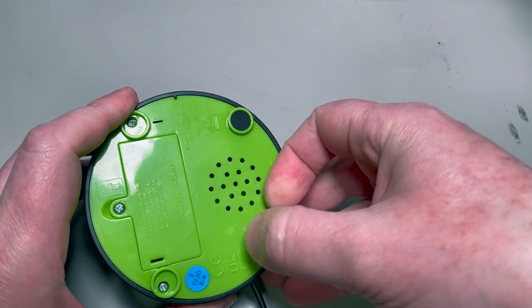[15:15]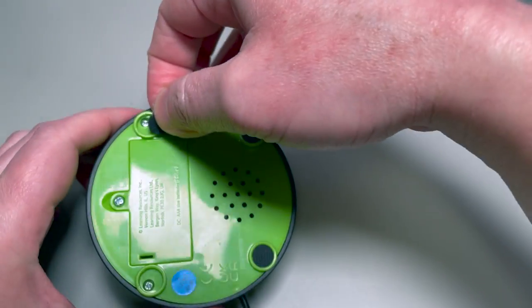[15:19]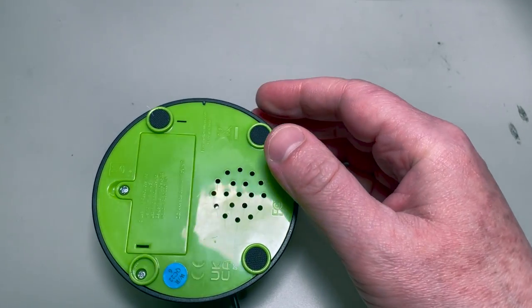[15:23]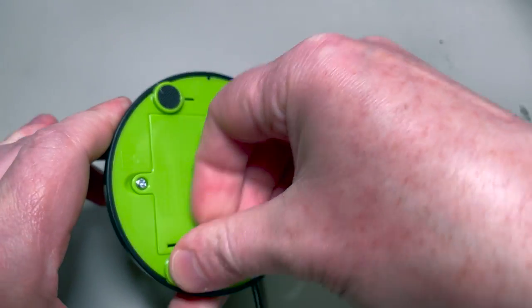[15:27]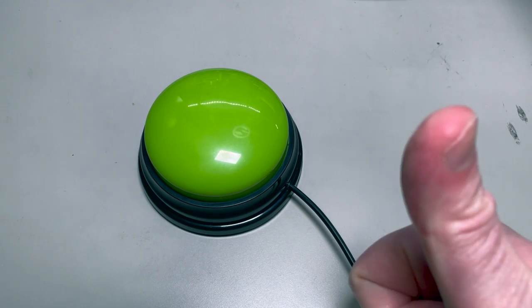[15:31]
Okay. If you are going to continue to trust your little black footies around small children, then you can stick them back in. Definitely only do this if they're still nice and sticky. Maybe you could put a dab of super glue in there and probably feel better about it. Great. This side is done. Now it's time to assemble the other end.
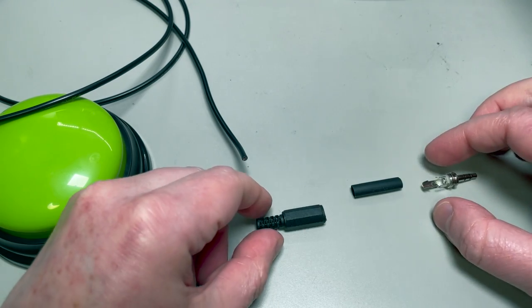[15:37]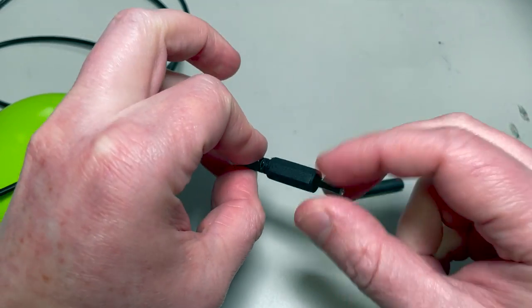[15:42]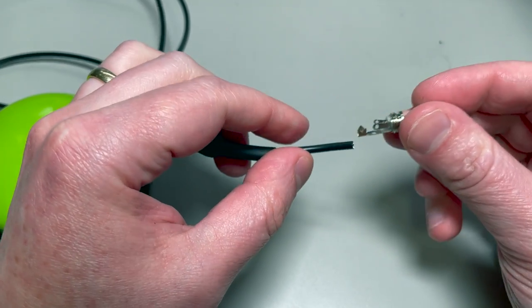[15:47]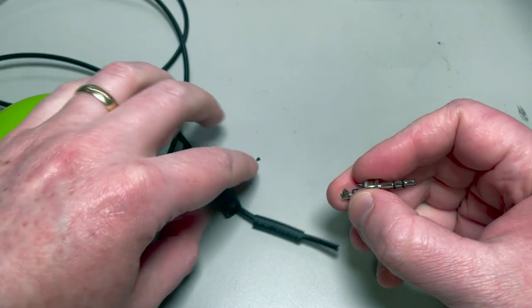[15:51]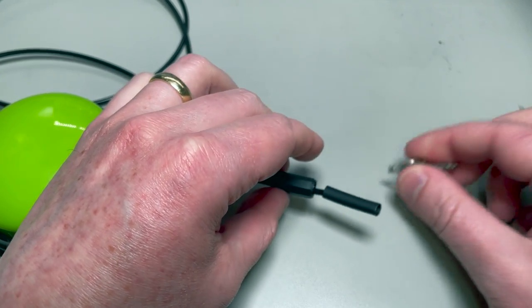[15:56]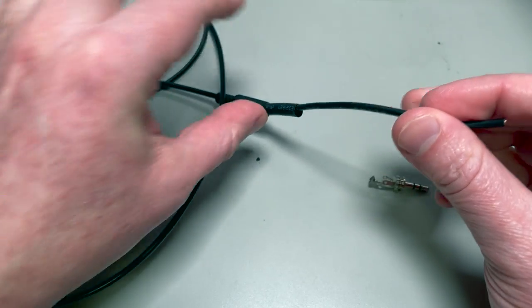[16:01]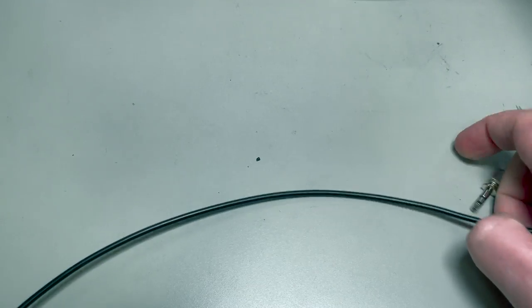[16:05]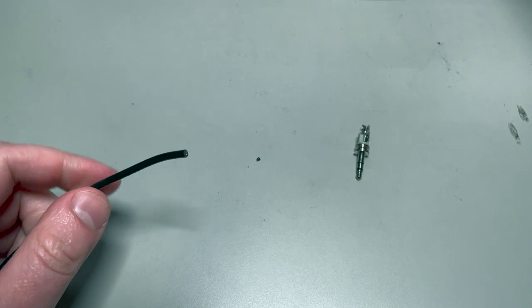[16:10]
So we will be putting on this plug housing and then some heat shrink tubing, and then we will be stripping and soldering this wire to this plug, and then heating down the heat shrink tubing to cover it, and twisting everything together. So definitely slide these on first so that you don't forget to. It is very unfortunate when you finish getting all this soldered up and then have to come back and cut everything off because you forgot the housing.
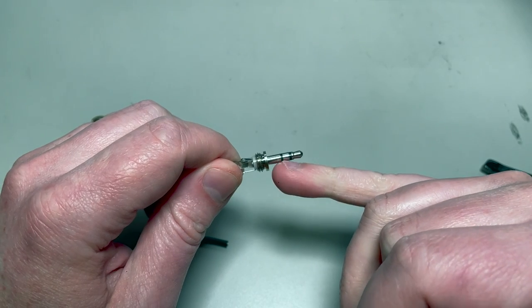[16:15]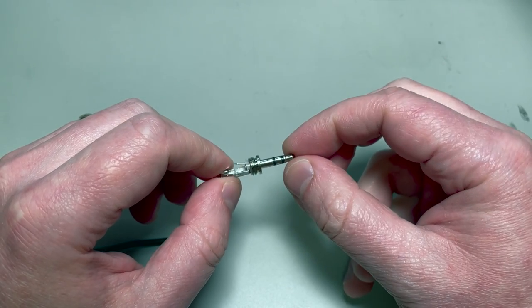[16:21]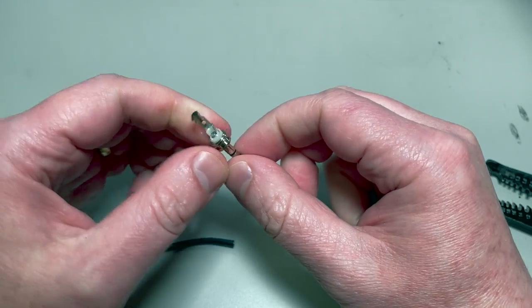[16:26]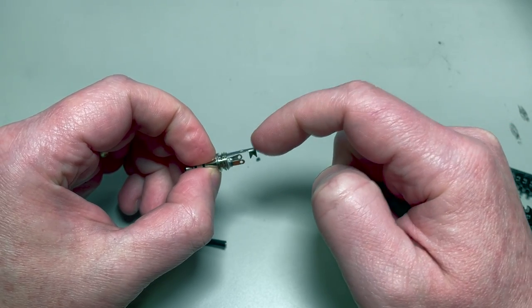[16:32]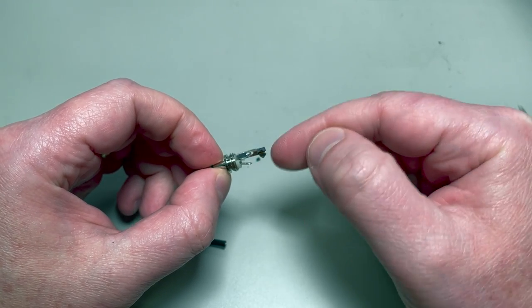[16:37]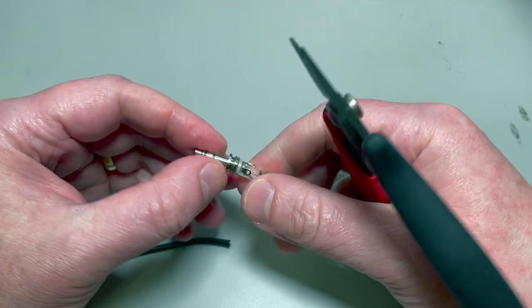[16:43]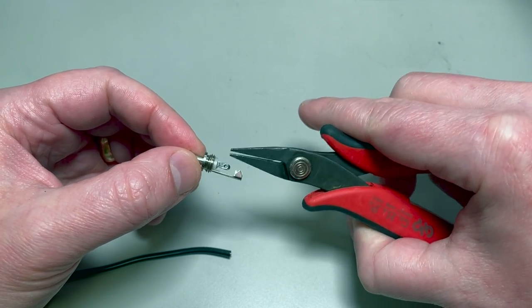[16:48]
Okay, this is a stereo plug. So it has three sections here, and we actually only need a mono connection. In fact, we want this to be mono so that it'll work with whatever female plugs anyone else has attached to a toy. So that means one end of what we solder is going to go to this back piece, and then these other two down here we're going to tie together. And the way that I like to do that, I'm sure this is ripe for improvement, so if you have any ideas, let me know, is I'm actually going to bend these two together so that the holes on the ends of them line up, and then I'll feed the wire straight through it.
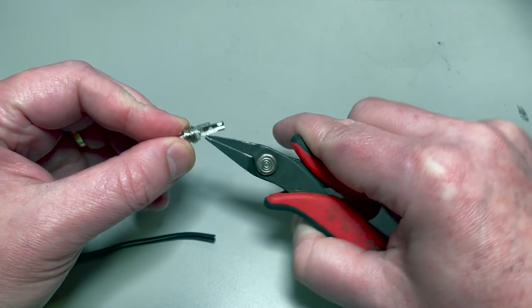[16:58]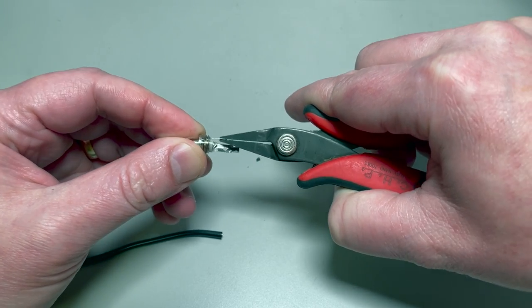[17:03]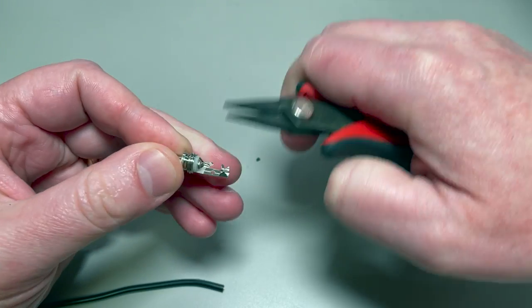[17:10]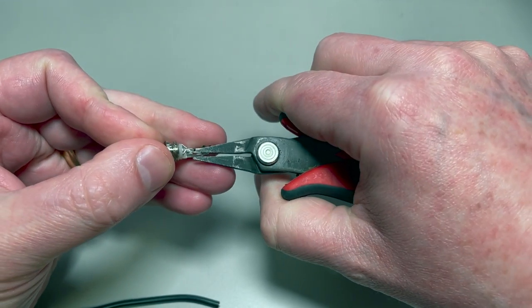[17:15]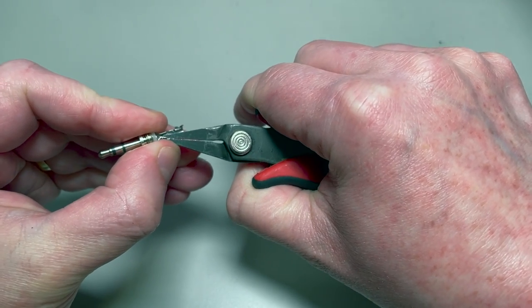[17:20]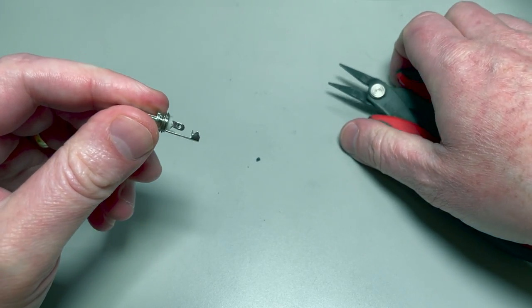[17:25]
So I like to do that by grabbing one end about halfway down, bending it back and then in, and then do the same on the other side, bend it back and in, and then I can clamp them together, and you play with it for a little bit and you'll get those holes to line up. I think I was a little aggressive with the first one. Again, this process is a little fraught. Okay, that lines up pretty well. I can see through there. So now it's time to strip this wire.
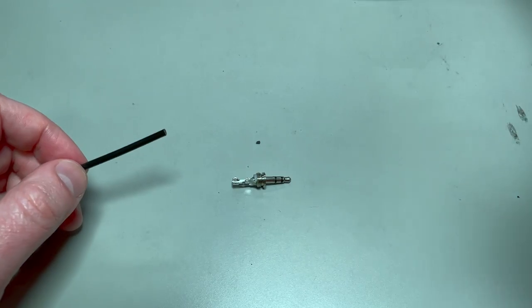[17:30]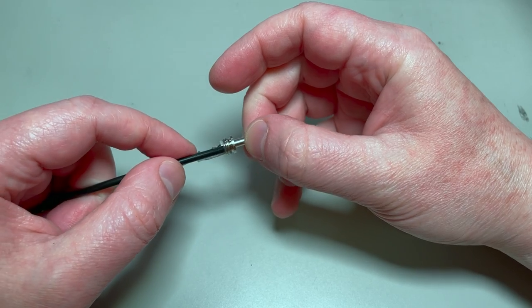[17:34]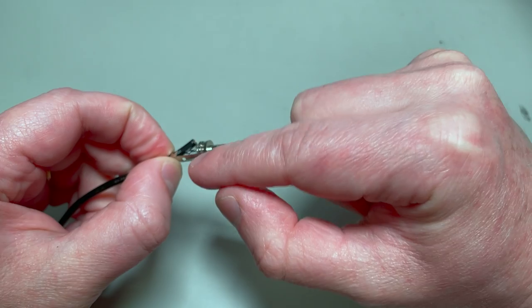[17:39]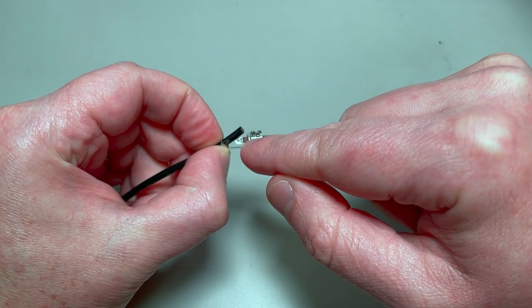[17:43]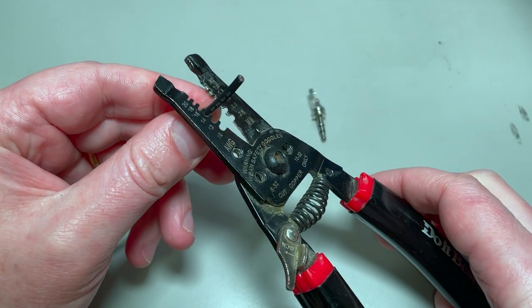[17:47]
Okay, we will be stripping off some of this wire, and then it's going to get clamped down in this area. One of the leads is going to head through this small hole in the back, and the other lead is going to head through that hole. So we don't need to strip off a lot of this.
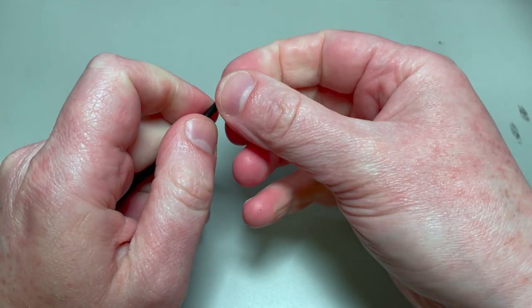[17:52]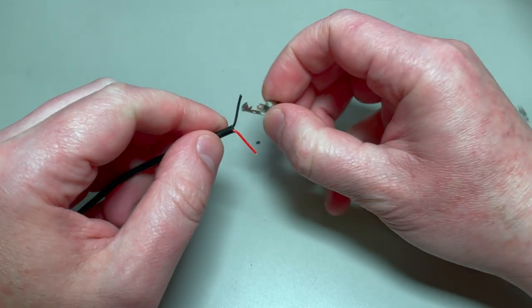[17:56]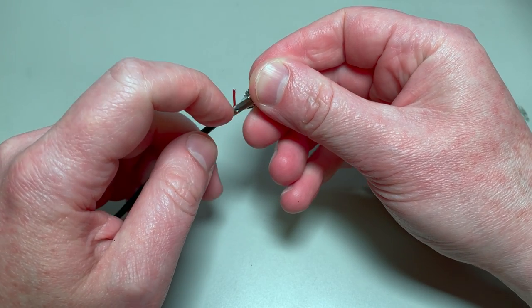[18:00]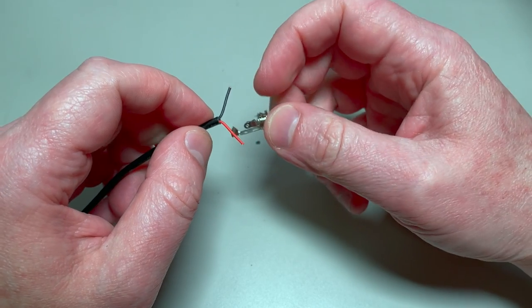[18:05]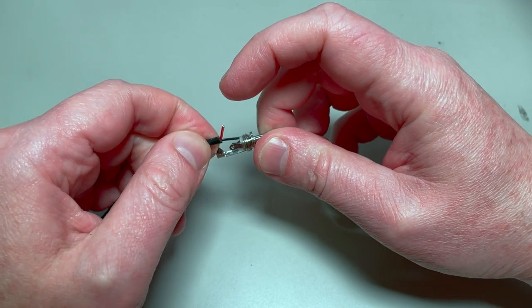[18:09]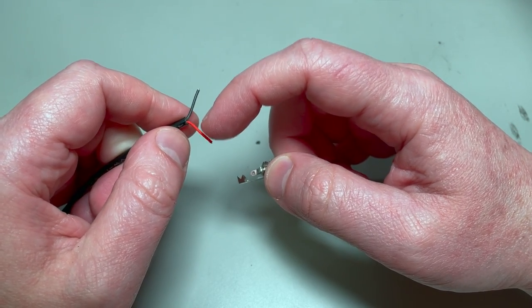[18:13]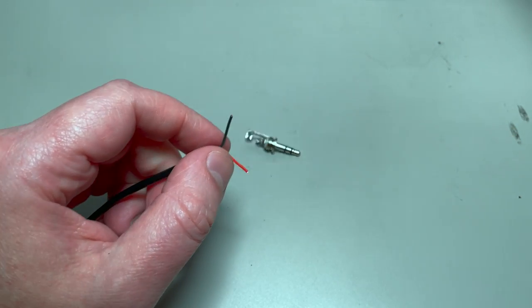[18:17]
And importantly, one of them we will be stripping down. As you can see, there's not a lot of room between where it clamps and where that hole is as far as length down this wire. So we're gonna strip one of these almost all the way back so that as soon as it's clamped, it just turns and goes straight down. The other one will leave a lot of its sheathing and just strip it at the end so that it's a little, well, we'll see. It's easier to work with.
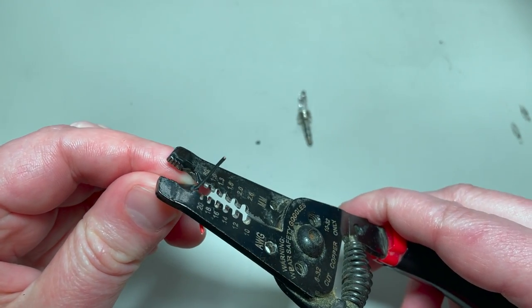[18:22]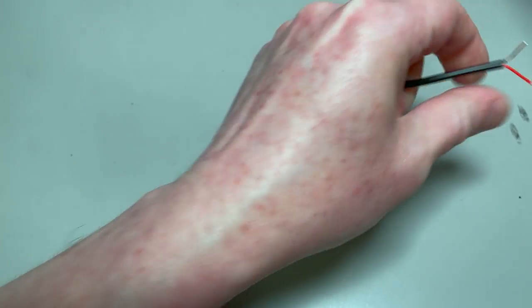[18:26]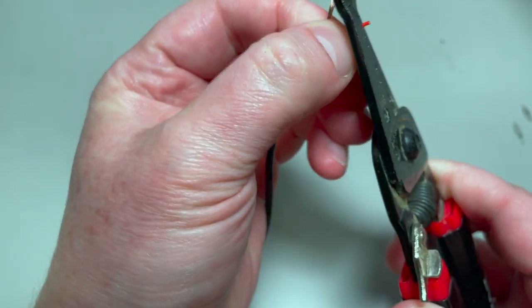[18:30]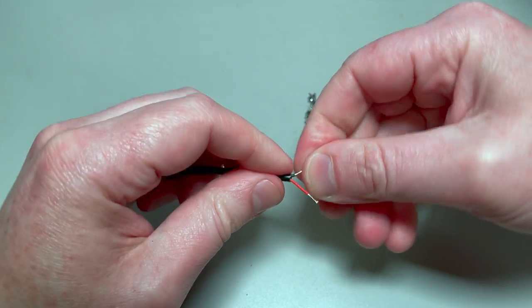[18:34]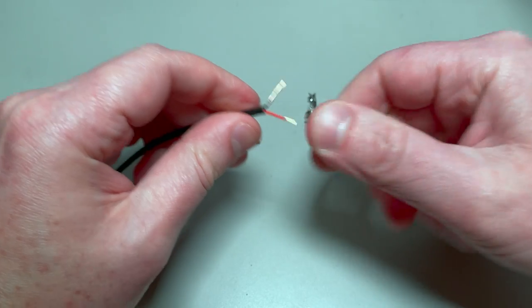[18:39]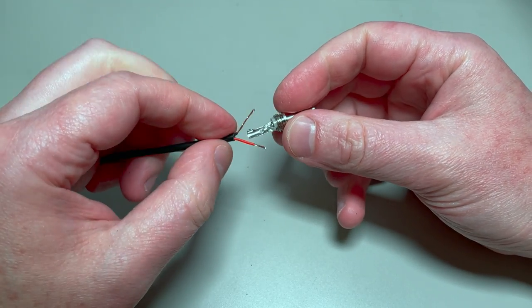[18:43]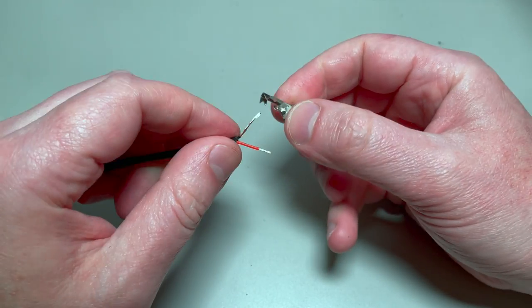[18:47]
Okay, so let's strip this just about all the way back down. And this one, just at the end. Because of the type of connection that we're making with these switches, because it's just closing a simple circuit, it doesn't actually matter what our polarity is here. So red, black, doesn't matter. It doesn't need to match up with what you did in the button either, which is kind of nice.
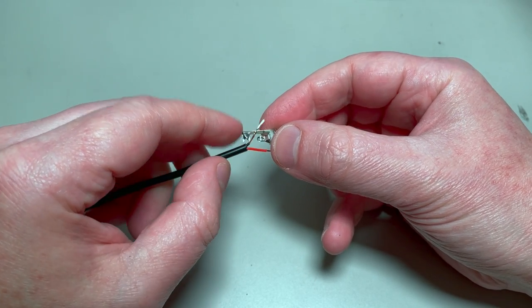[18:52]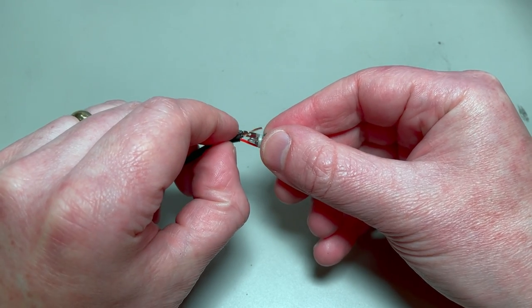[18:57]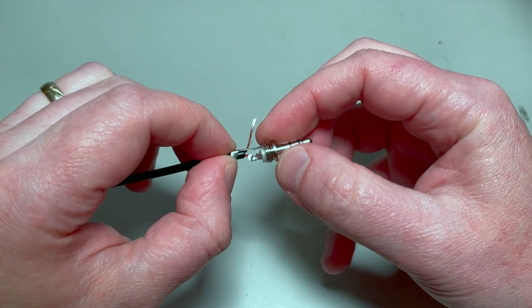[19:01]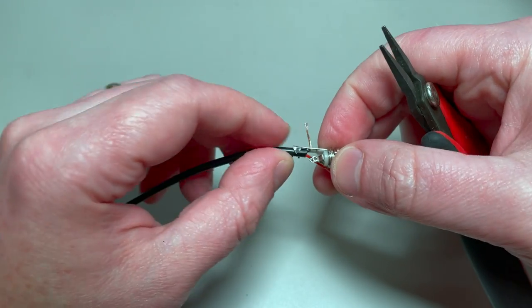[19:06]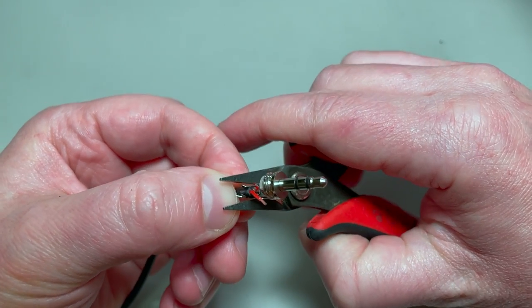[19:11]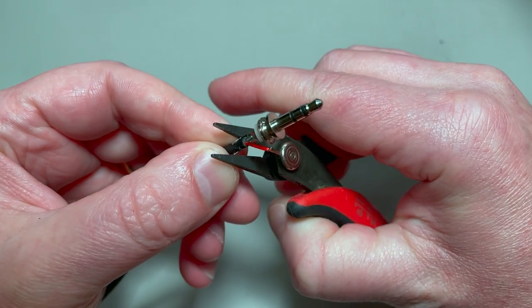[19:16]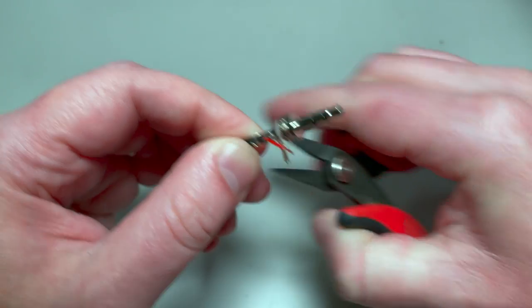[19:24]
Okay, so you'll see that the end that I've stripped further, I'm sending into the smaller hole, and it's going to get clamped right there in that jacket. Let's actually do that right now. I don't know what tool you're supposed to use for this, so I'm just using my little flat pliers here that are super excellent and I use for everything. They get the job done. If you know the right tool that I'm supposed to use for this, let me know. In fact, if you know a better way to do this entire part, let me know.
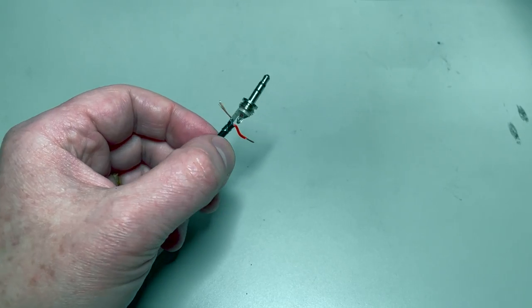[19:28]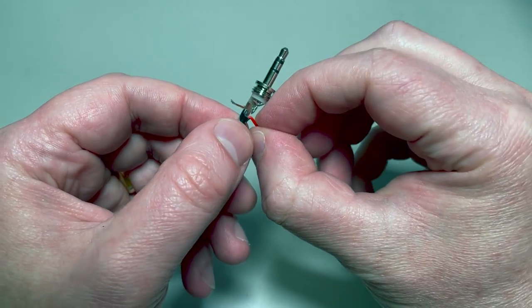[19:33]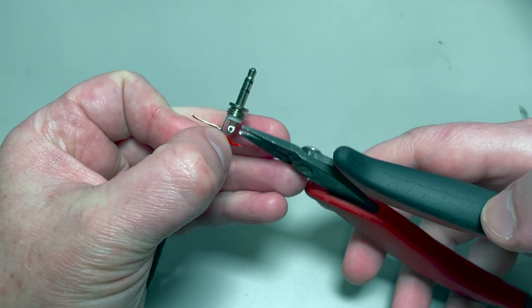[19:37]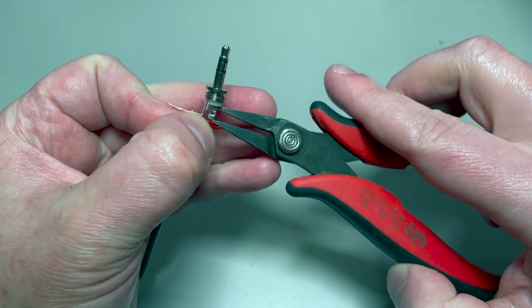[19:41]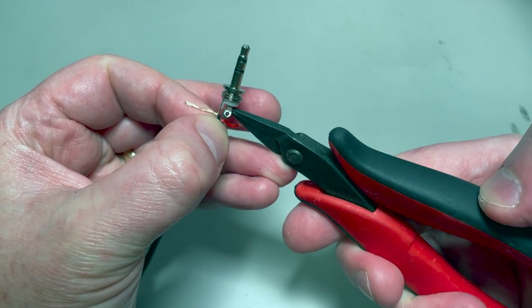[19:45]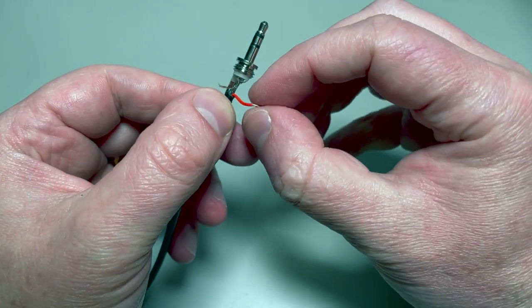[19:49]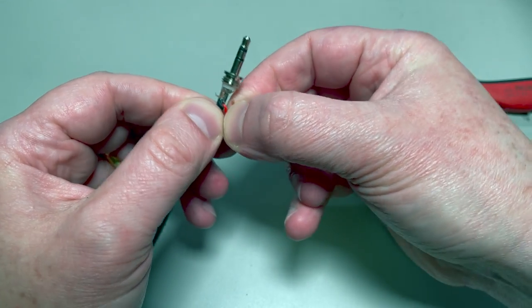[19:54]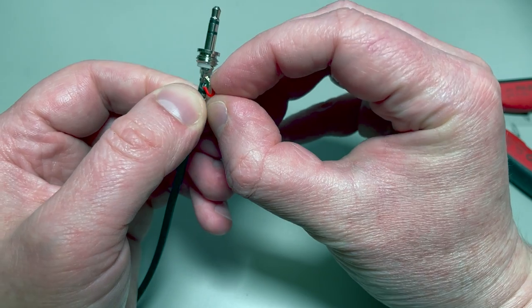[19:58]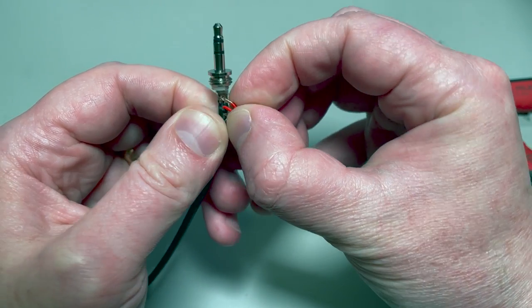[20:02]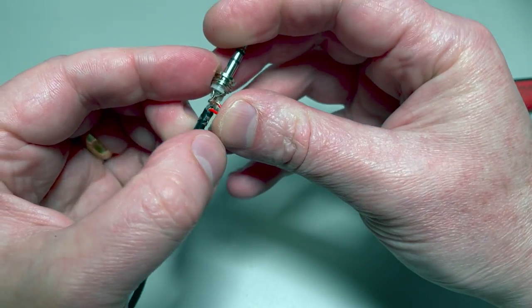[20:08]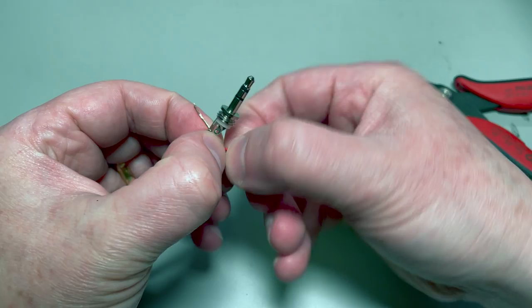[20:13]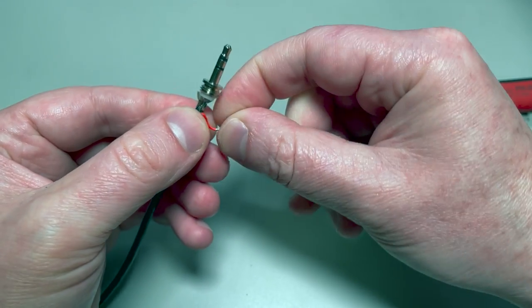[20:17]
Okay, we have our black wires heading out the back. So now it's time to get the red wire through these two holes, which I find to be the most challenging part of this. Let's really make sure these holes are lined up nice. Perhaps I should not have crimped the black wire down first. Give me a little more flexibility to get this through. And try retwisting the end, try again.
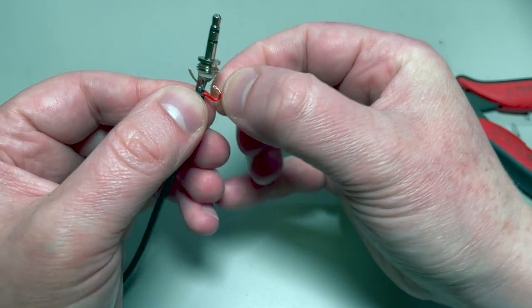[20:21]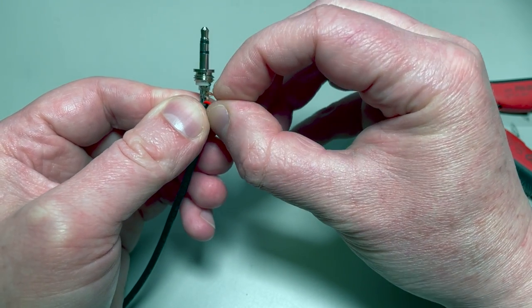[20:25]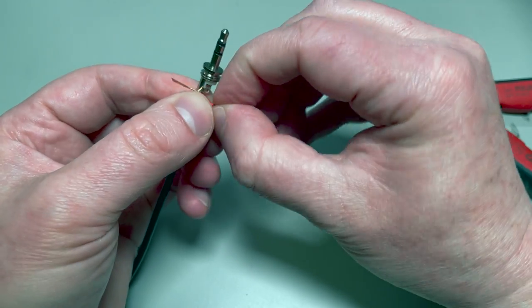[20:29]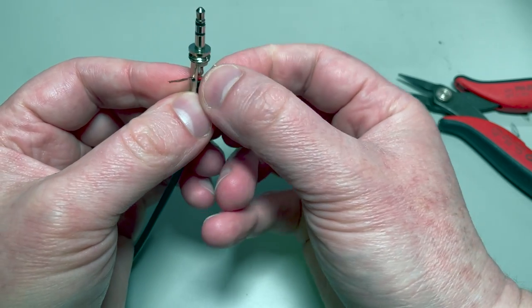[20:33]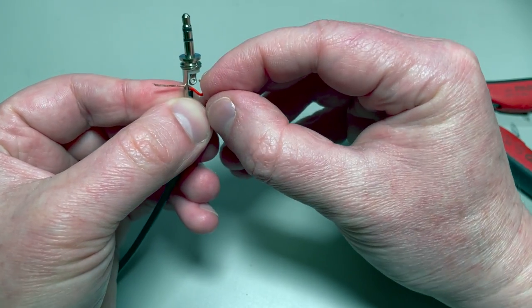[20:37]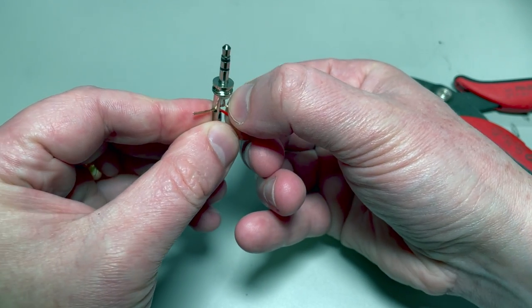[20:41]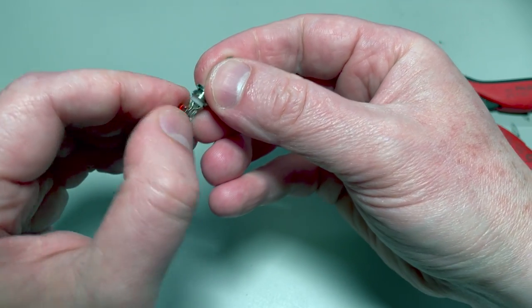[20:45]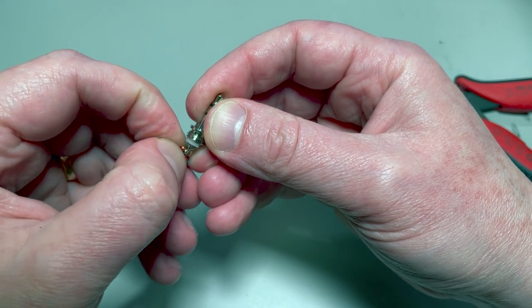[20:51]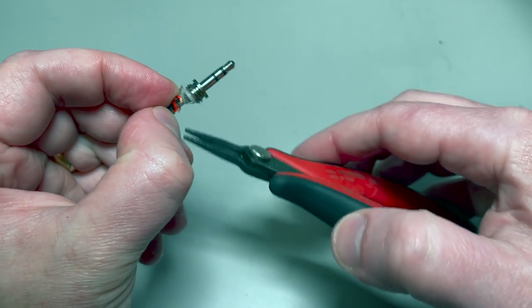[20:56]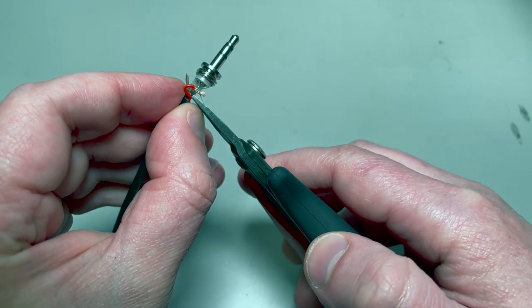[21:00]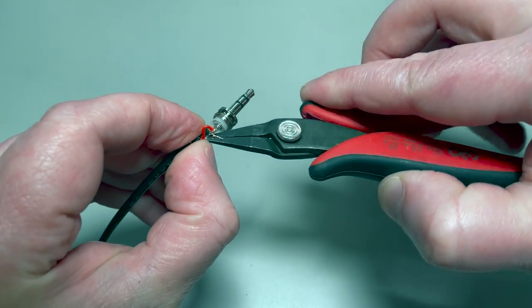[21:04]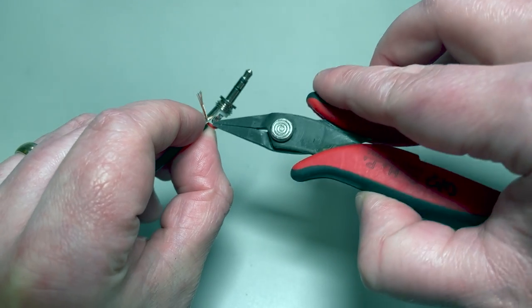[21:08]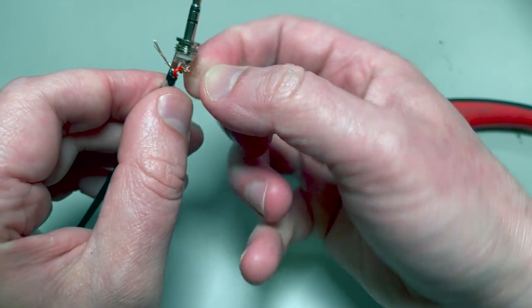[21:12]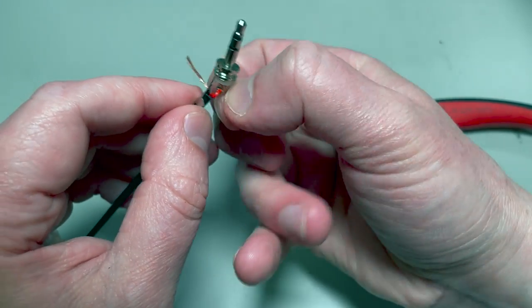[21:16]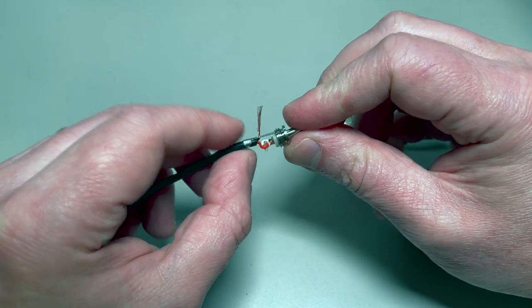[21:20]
I also don't know that it's especially necessary to be feeding this wire through, as long as you get it soldered on there well. Okay, there we go. All right. And tighten up all these little ends here. There. I noticed that one of the strands didn't quite make it through the hole, but I just pulled it around tight, and when we solder it on, that'll be good enough. Okay, great. Time to solder these.
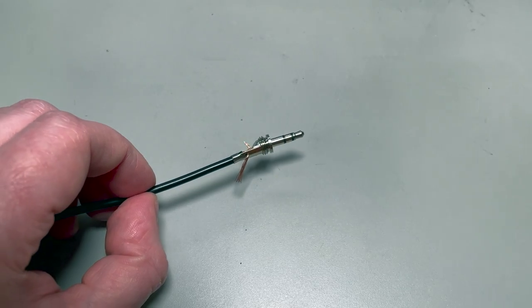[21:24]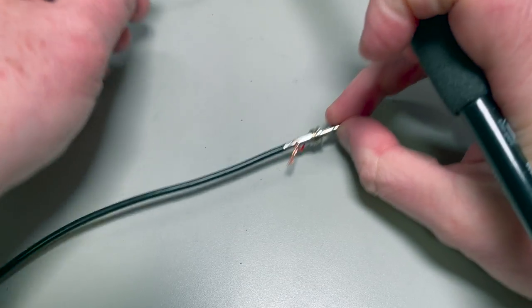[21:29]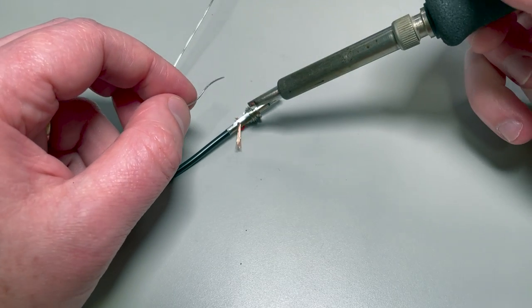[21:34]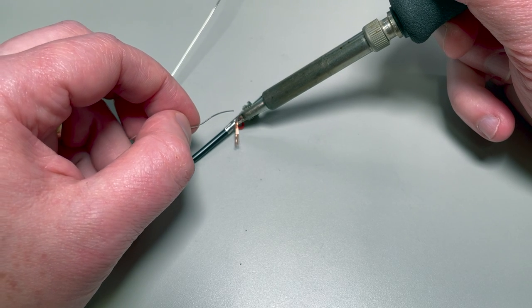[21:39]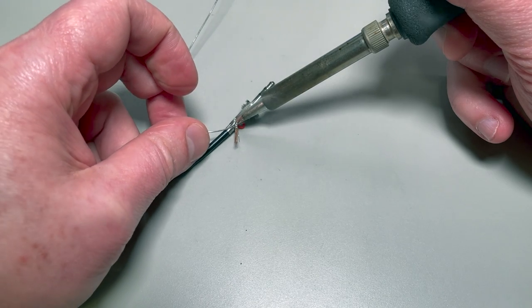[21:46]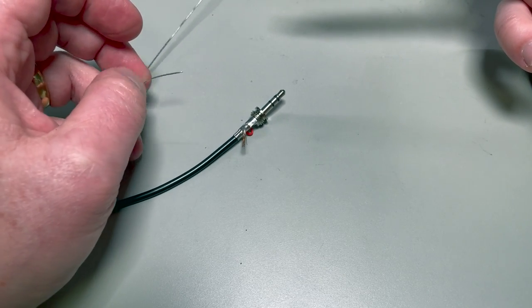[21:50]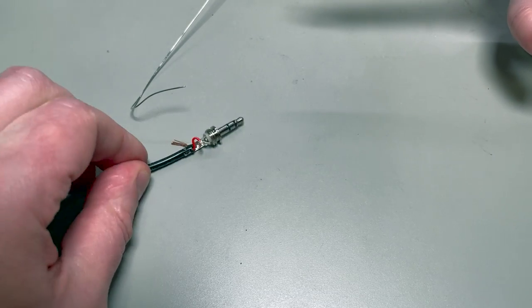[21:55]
Okay, the iron is once again hot. So go ahead and just apply it directly to where the wire meets the housing. Let that get warm, feed some solder into it. Get a nice good blob on there. Pull the wire away, or the iron away, let it cool. Great. Now we'll do the same for the red lead.
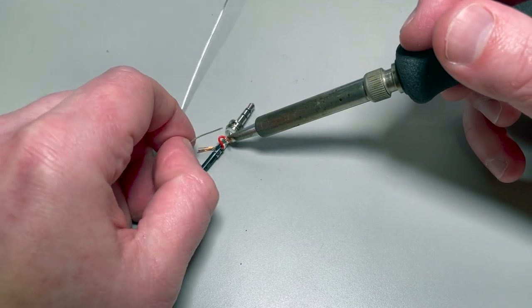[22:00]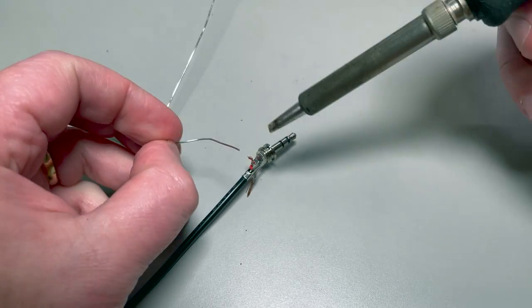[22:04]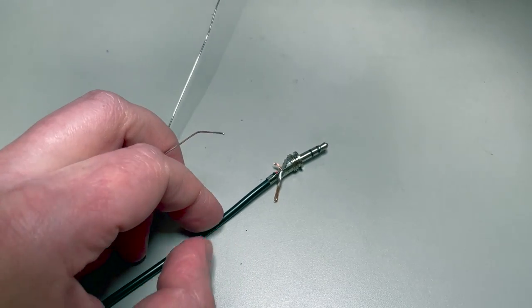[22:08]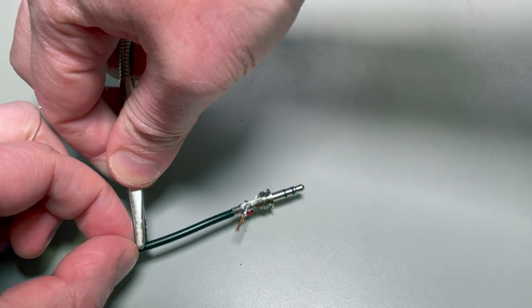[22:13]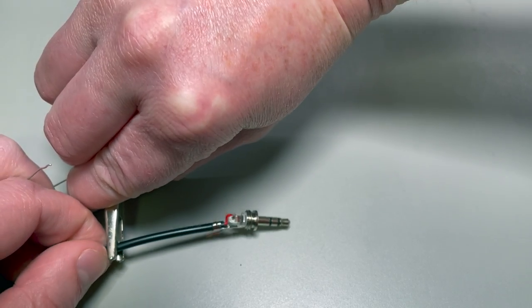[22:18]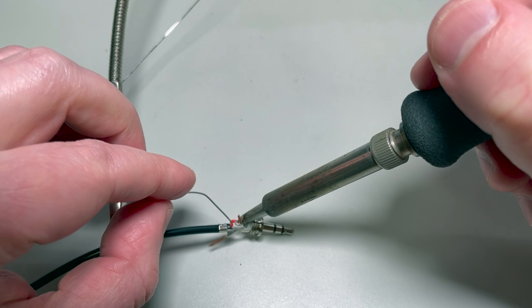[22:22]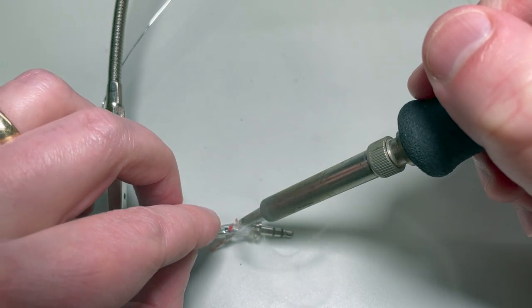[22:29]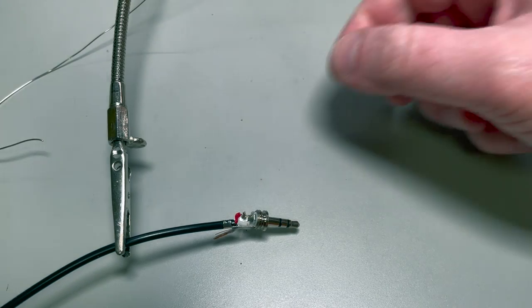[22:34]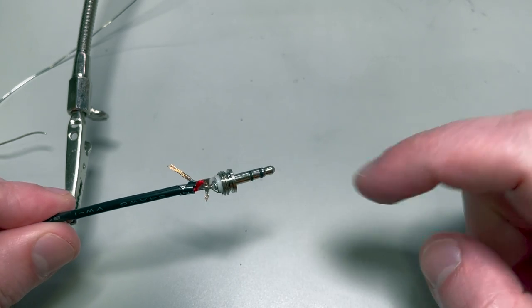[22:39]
Right where they meet. You know what? Got a little helper hand here I'm going to use to help keep this all in place. There we go. Okay. Iron at the seam. Good glob of solder. Pull it off. Perfect. Now don't touch the end of this because it has absorbed all that heat.
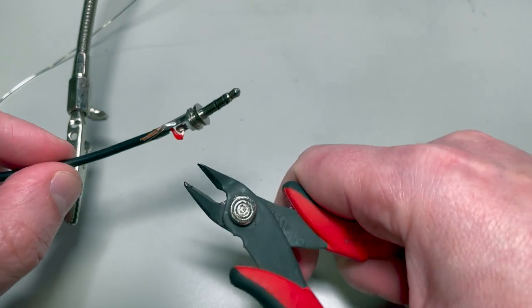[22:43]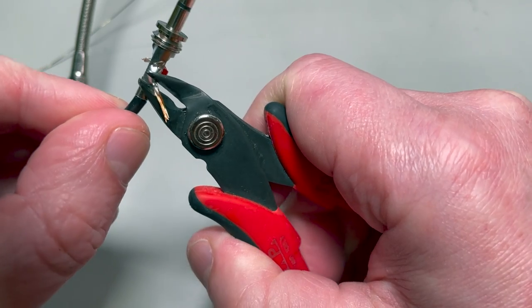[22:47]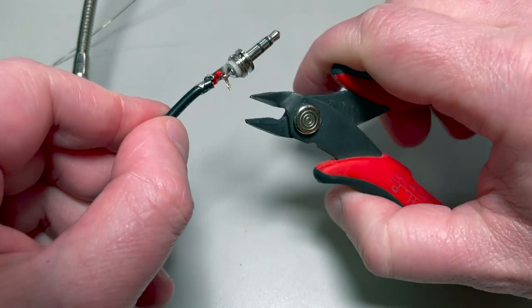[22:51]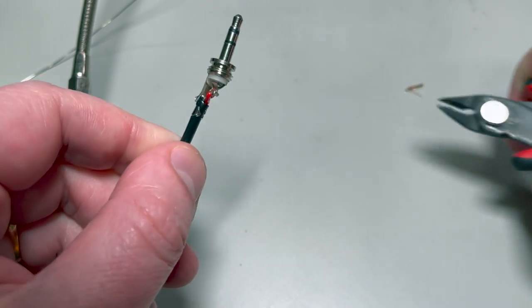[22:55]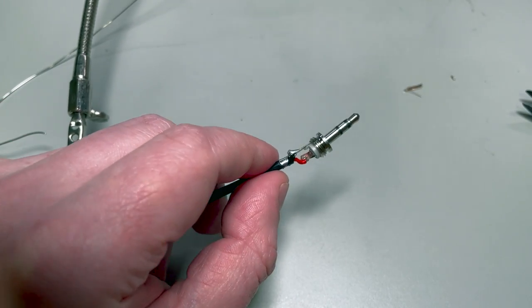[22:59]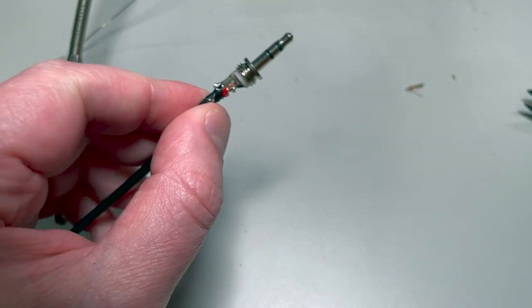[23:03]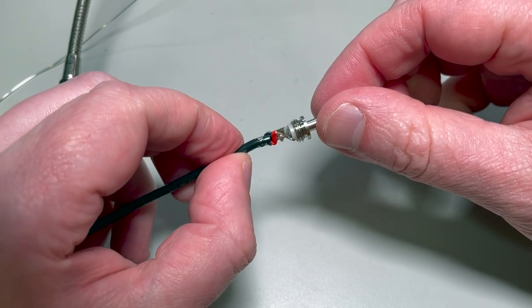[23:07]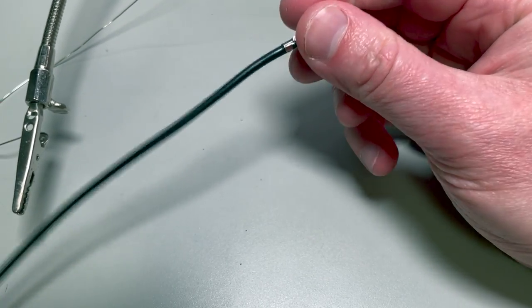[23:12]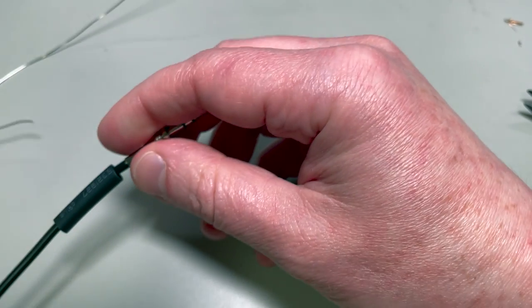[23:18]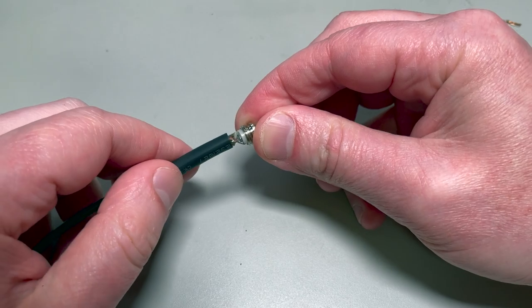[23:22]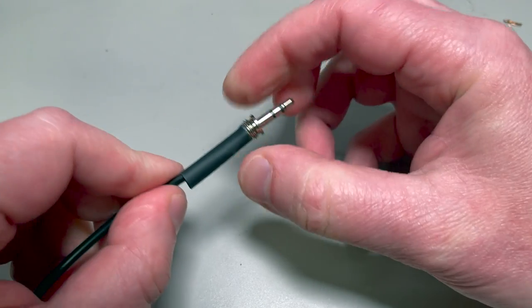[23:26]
All right, let's snip off all the extra strands. Pretty close, but not all the way to that glob of solder. And then I want to squish this up a little bit. There we go. So that the heat shrink tube will slide over it nicely. Okay, let's pull the heat shrink tube up. And get it fed over everything, and we're gonna try and feed it right up over this white collar if we can. So yeah, that's pretty good.
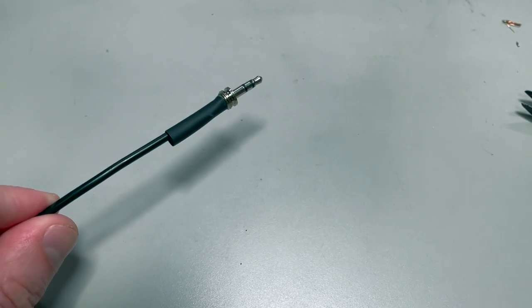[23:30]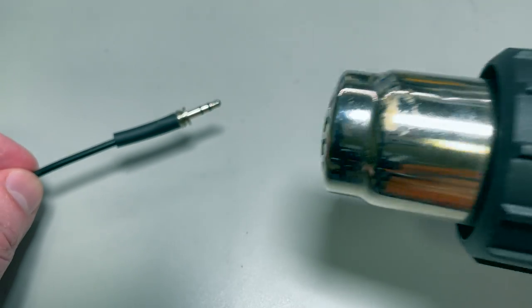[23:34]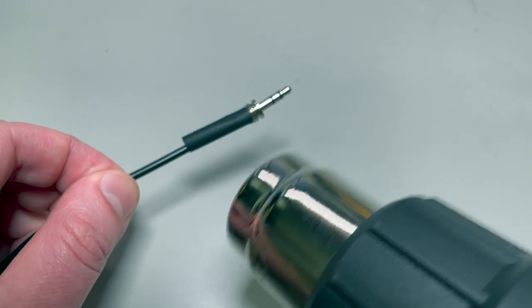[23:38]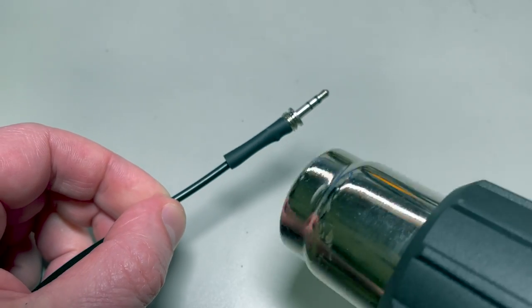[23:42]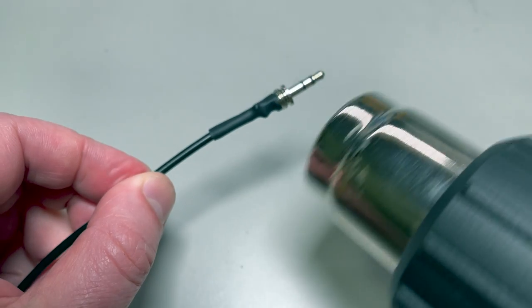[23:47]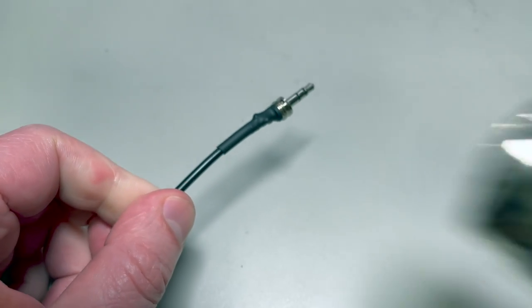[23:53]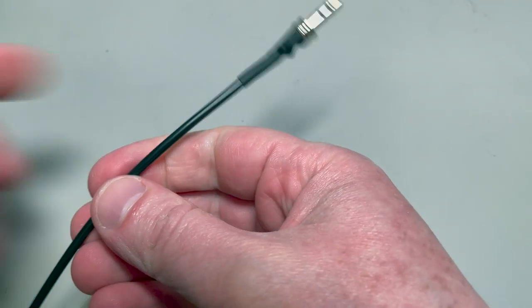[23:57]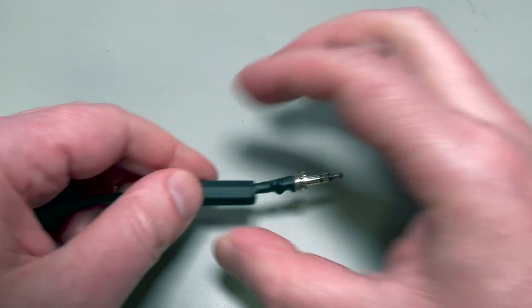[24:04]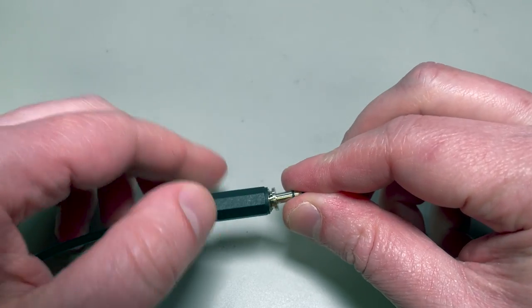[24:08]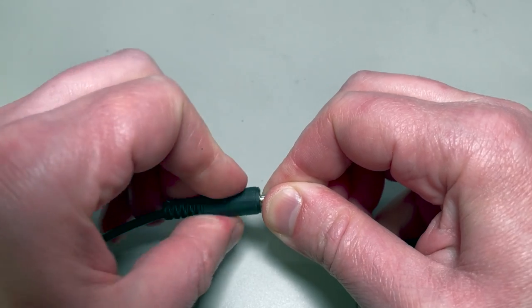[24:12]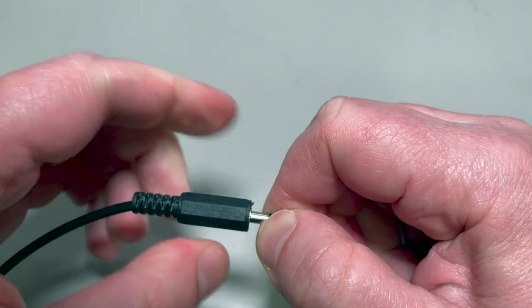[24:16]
Now time to hit it with the heat gun. Yeah, you could definitely use a lighter for this, but I've got a heat gun, so I'm going to use it. Okay, that's nice and snug on there. Now our very last step, we slide up the back of the housing, and again, make sure this isn't super hot, and twist it together. There we have it. That is on there, nice and secure.
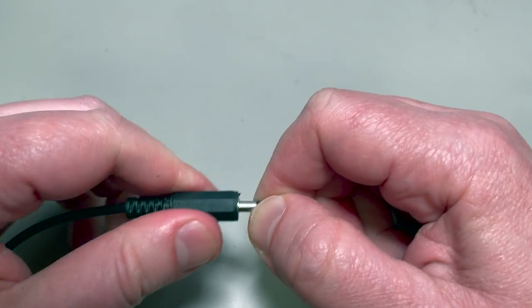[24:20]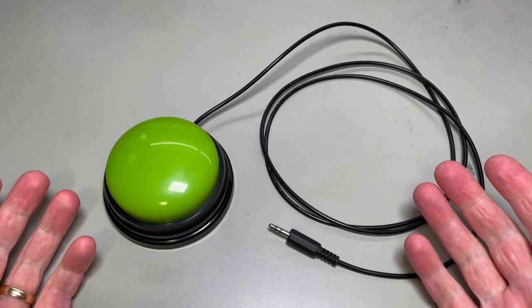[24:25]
Hooray! And there you have it.